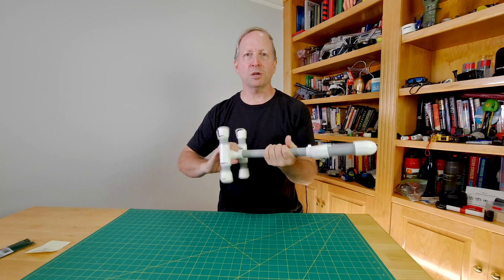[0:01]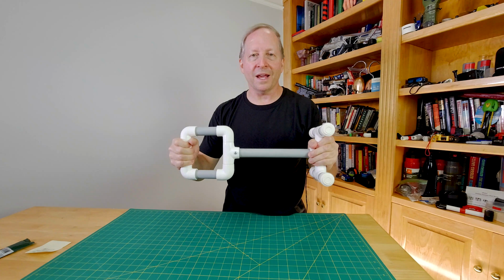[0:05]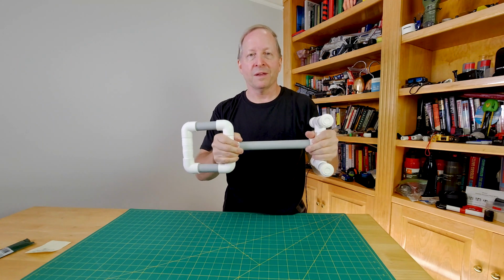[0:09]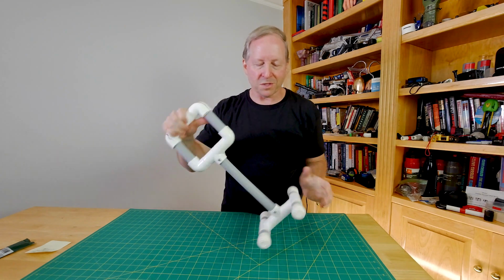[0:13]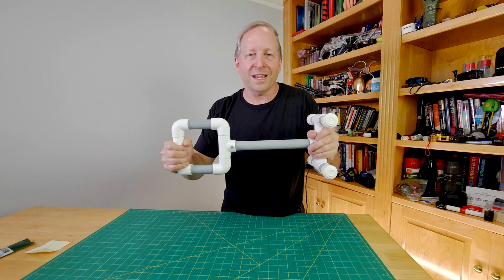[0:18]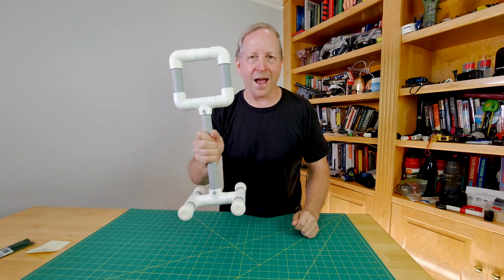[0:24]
Today, I'll show you how I made this standing aid, lifting aid, mobility aid for folks that are having troubles getting out of chairs, or maybe they've got an injury, and so you can use this at different levels. This combines 2 or 3 different devices that each cost around $30 to $40, sometimes even $50. And you can make this guy for around $15.
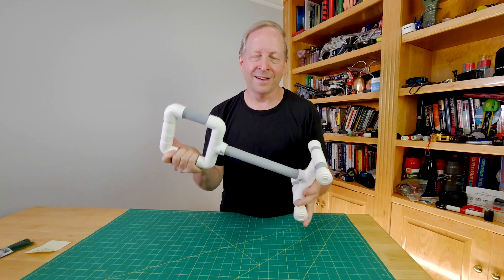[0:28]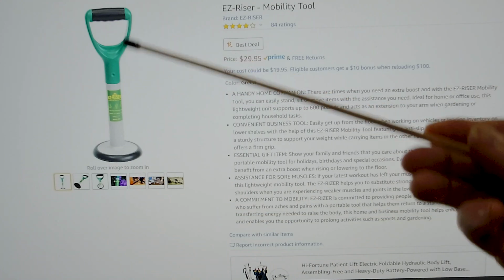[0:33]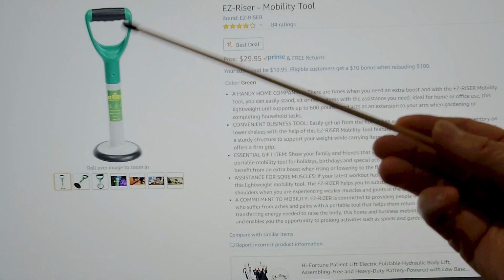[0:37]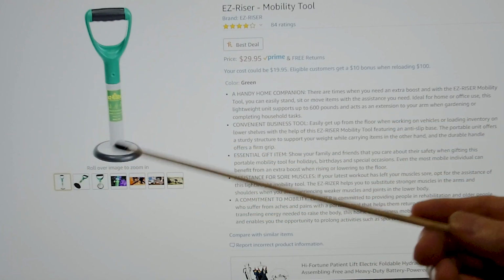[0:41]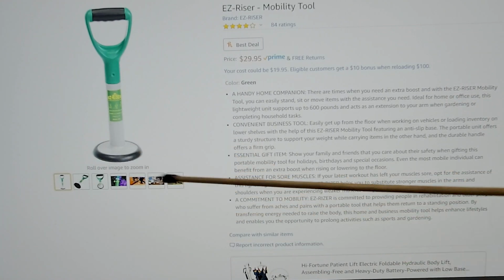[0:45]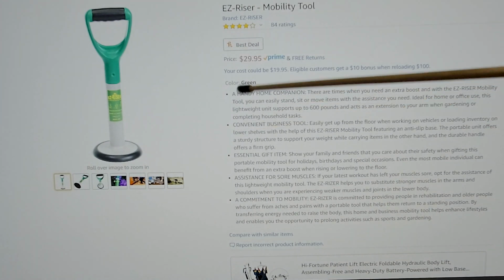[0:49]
Interested? Here we go. Here's one of the designs that I'm basing mine on. You've got a handle here, and people complain that that length is not long enough, so mine will be adjustable. And this base looks relatively small, although there's advantages to a circle. I don't think the base is strong enough, and yet it's fairly highly rated and costs around $30.
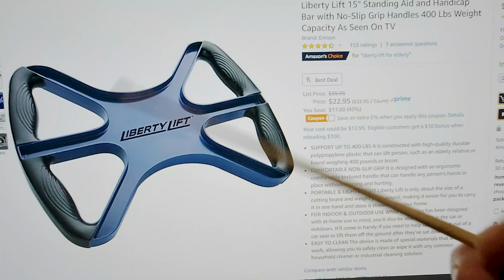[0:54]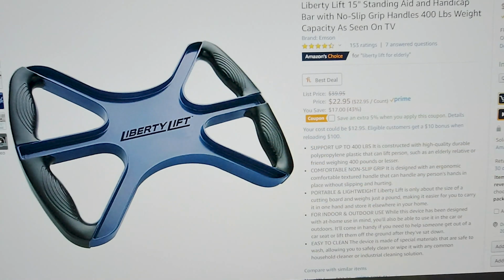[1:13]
First example was a riser. This one's called a lifter. Usually runs $40. It's on sale right now, $22.95. There's a little extra off, but it's just a 2-grip handle. Highly rated. If you bought both separately, around $50, $60. And my build, I'm going to incorporate design features of both of these.
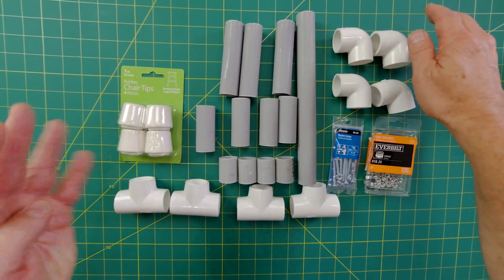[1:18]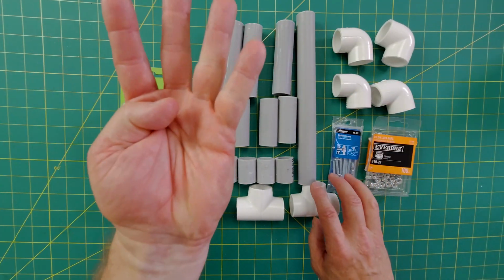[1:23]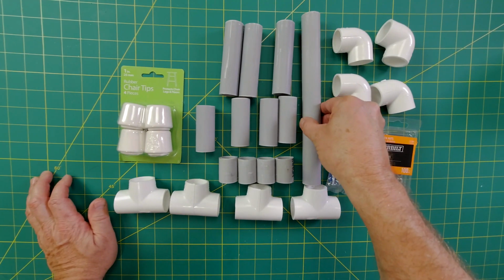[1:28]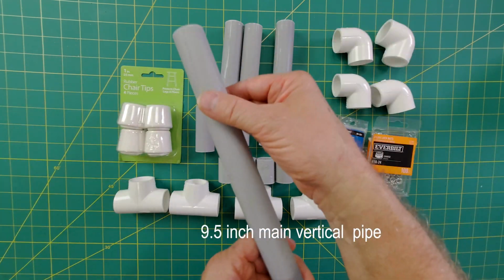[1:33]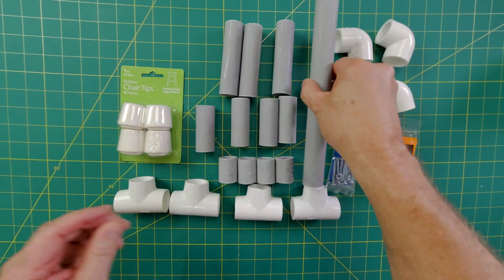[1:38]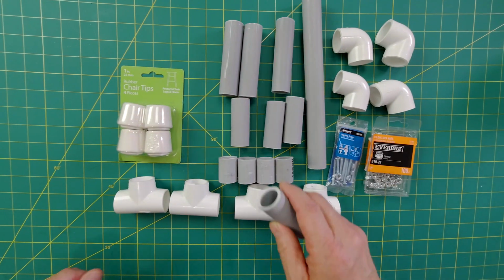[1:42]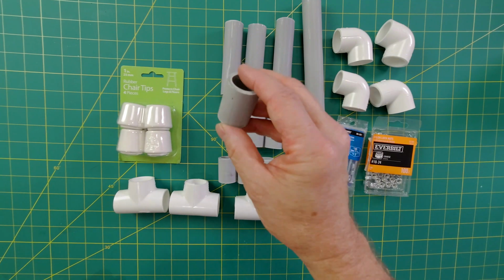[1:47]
There's a lot of parts in this build, but none of them are very expensive. You have 4 elbows. These are 3/4 inch elbows. 4 T's. You have a 10.5 inch long, 3/4 inch PVC pipe. Now you could use white. I'm just using gray kind of as an offset in color. 3 5-inch long pieces of pipe. 4 2.5 inch long pieces of pipe. And then these are just shy of 1.5 inches, and there's 4 of those.
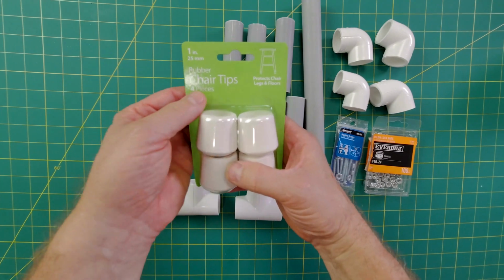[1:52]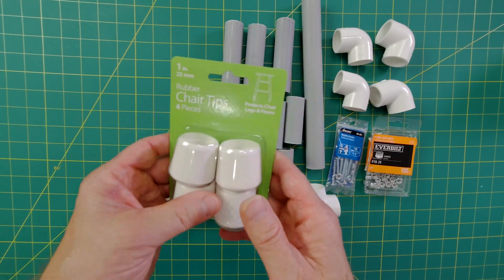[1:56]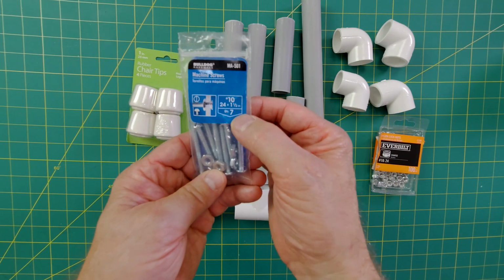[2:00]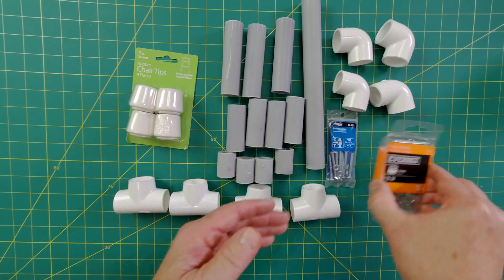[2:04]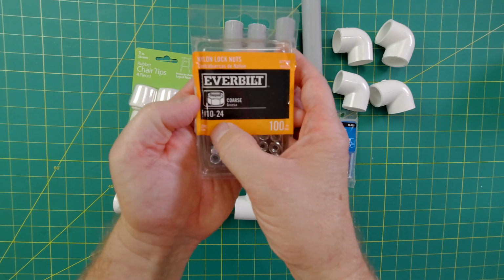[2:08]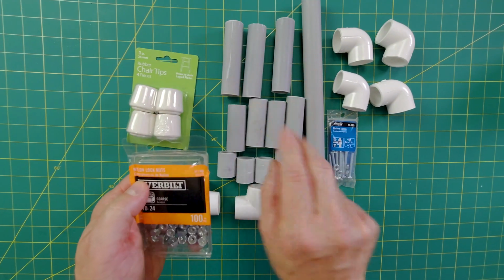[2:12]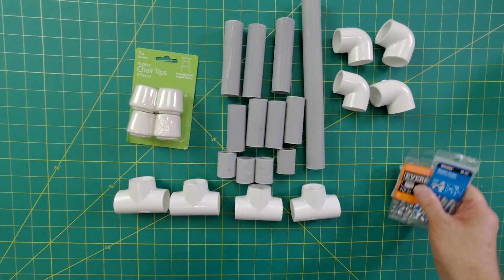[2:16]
And then I'm using these chair tips, and they're 1 inch, 25 millimeter. We're using number 10-24, 1.5 inch long machine screws. You can get this for about $1. And then you don't have to get this many, but we're using the 10-24 nylon lock nuts. We'll need 2 of these and 2 of these.
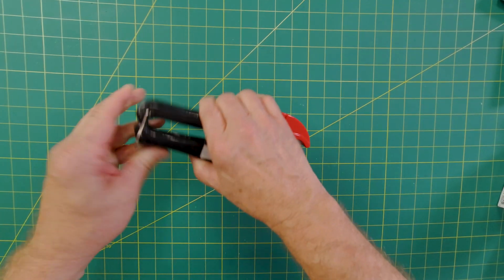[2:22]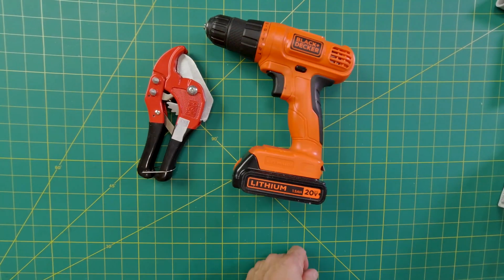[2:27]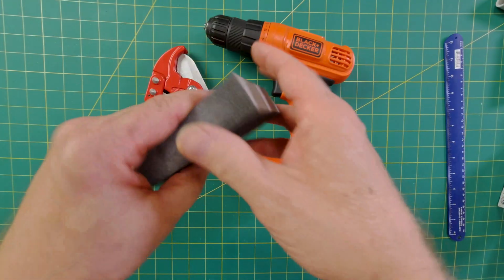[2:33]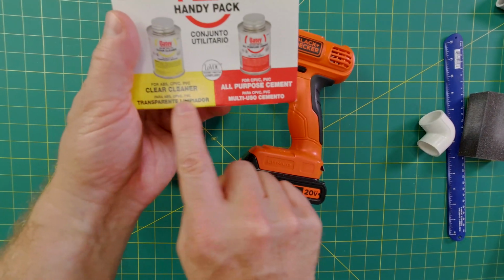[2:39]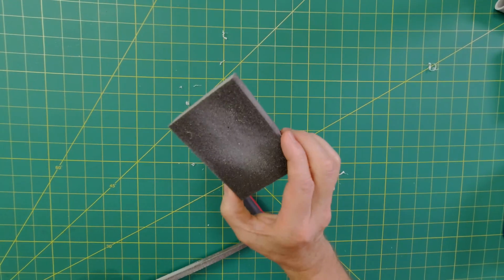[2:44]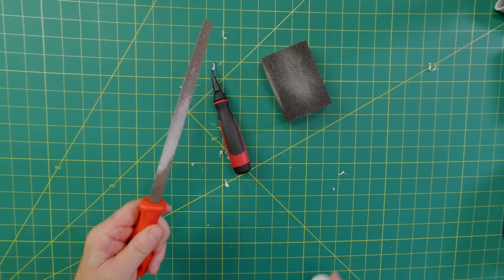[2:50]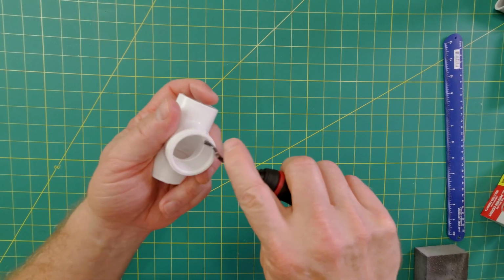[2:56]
Tools, you need a PVC pipe cutter, or you can use a hacksaw, a drill and a drill bit, a tape measure of sorts, or this is a ruler, some sort of sanding sponge, and then you're going to be gluing these up, and I'm just using a handy pack here, clear cleaner, and clear all-purpose cement. Besides the sanding sponge, a deburring tool and some sort of small file also are very helpful in cleaning up these PVC joints. Better than a file though is this deburring tool, because it just gets right in there and cleans it right up.
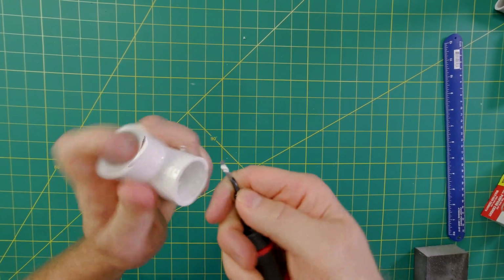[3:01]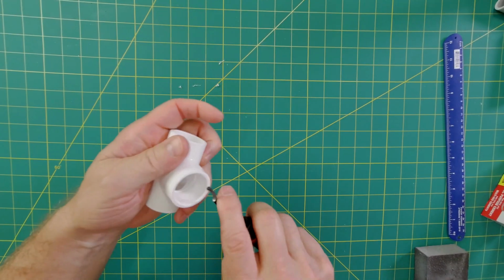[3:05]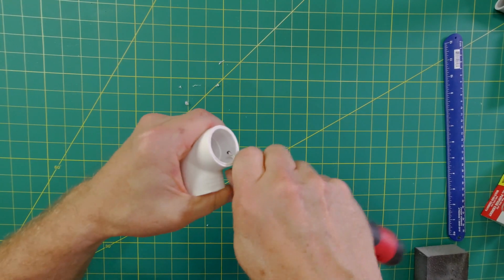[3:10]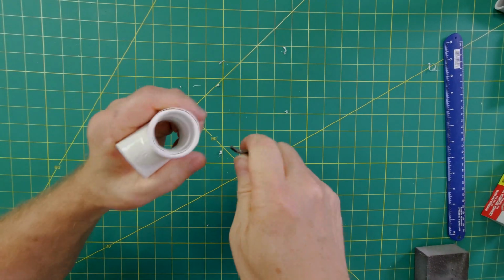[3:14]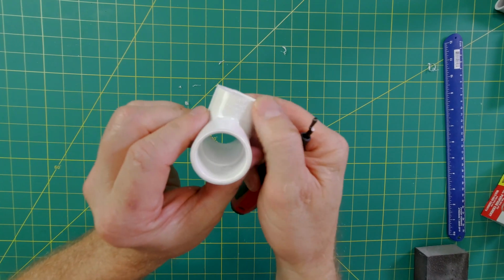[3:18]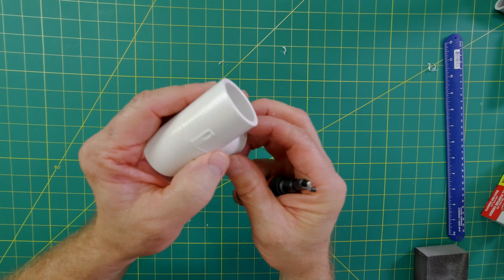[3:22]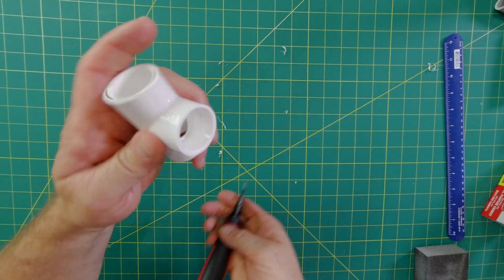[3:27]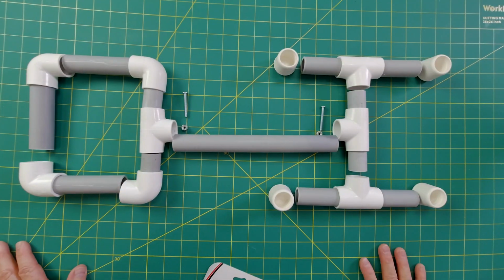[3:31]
I'm going to do an evaluation on deburring tools because they're just that impressive. Carves it right down flat. Just go around and makes real quick work of it. Nice and smooth. And then you can also use the sandpaper. You may or may not be able to see some lettering here. You can take all that lettering out. You could just sand all this down, or you could just leave it rough. Totally up to you.
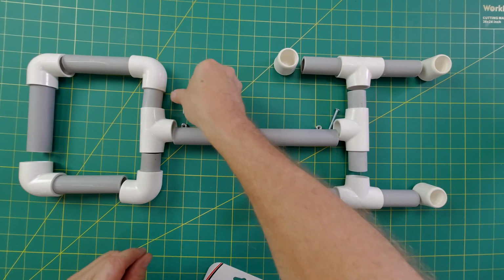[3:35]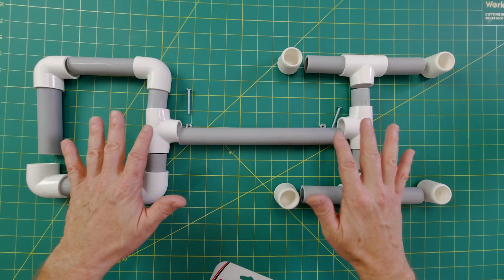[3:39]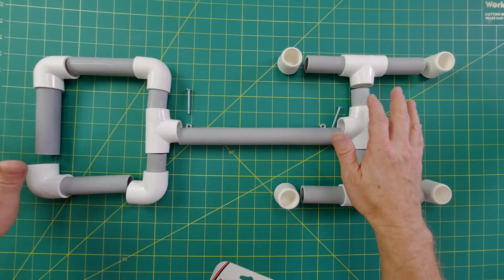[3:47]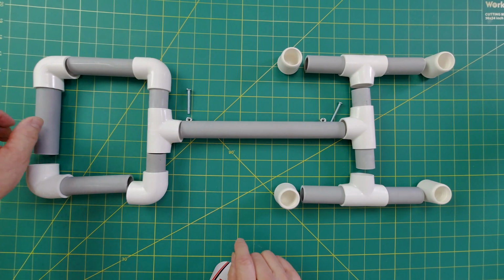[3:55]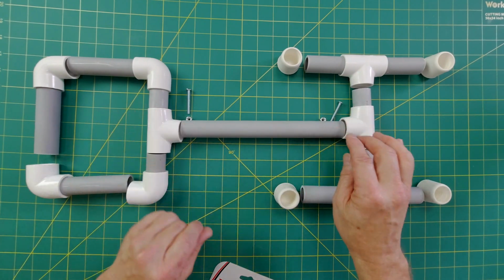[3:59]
Here you have an exploded view of the build. Everything's sanded and cleaned up. You can see the screws here. For other similar constructions, this dimension is 15 inches. I've expanded it out to 17 inches based on comments I saw on other designs that people say that's too short. Now the advantage with this design is that you have 2. You have one that's about 12 inches and one that's 17 inches. So you can push off of here and you can push off of here. I may change that. I might make it longer, I might make it shorter.
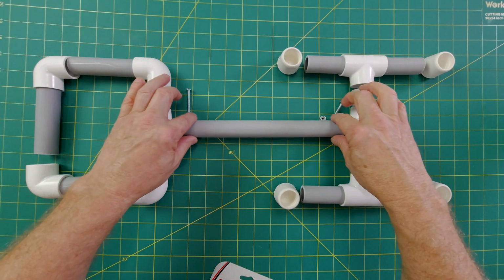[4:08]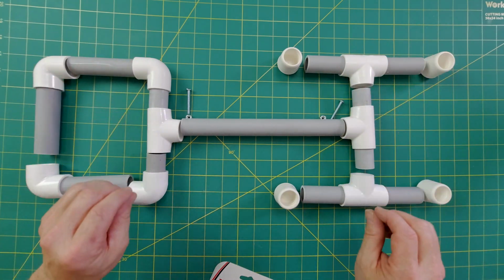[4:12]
So if I glued this up, and you certainly could glue these 2 T-sections together, that would be great, but you would not be able to take and adjust this without starting all over because everything else is glued up.
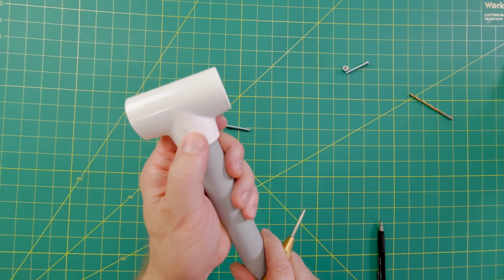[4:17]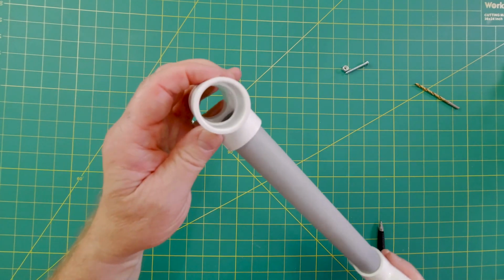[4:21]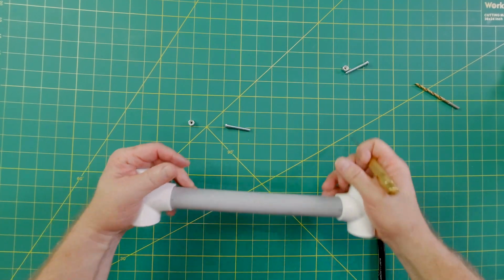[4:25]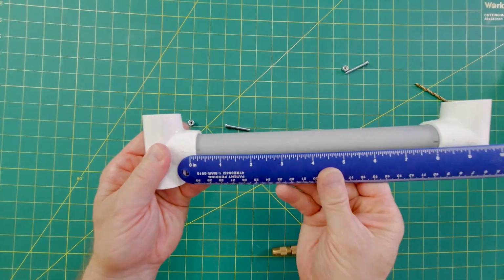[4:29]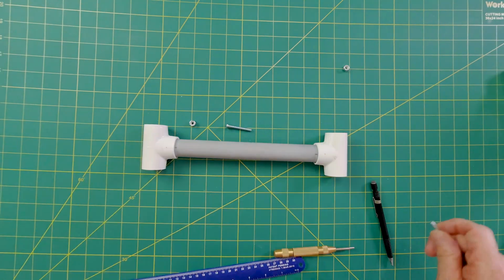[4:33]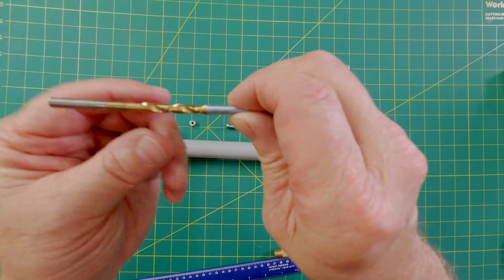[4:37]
Okay, so I've used a center punch and I've actually gone in, and you can see a line right here, and I've lined up the pipe. You can actually see inside and see that the pipe is right to the edge there, so it's a nice strong fit. I'm coming in about 1 centimeter or 3/8 inches on either side. I'm using a 11/64 inch drill bit and drill all the way through.
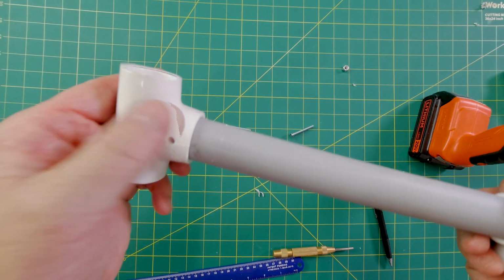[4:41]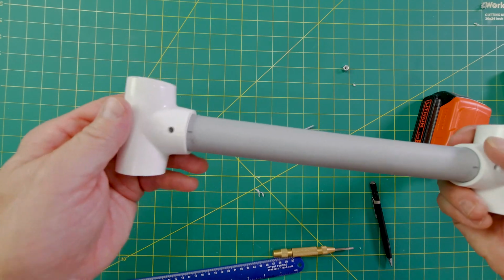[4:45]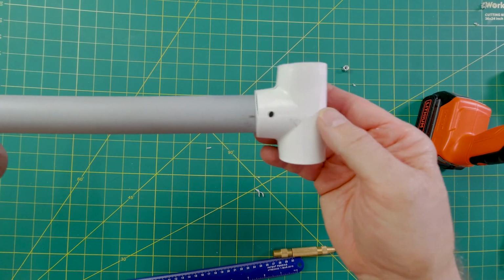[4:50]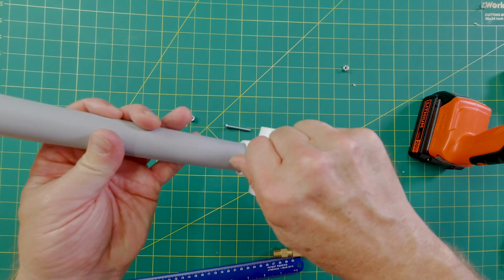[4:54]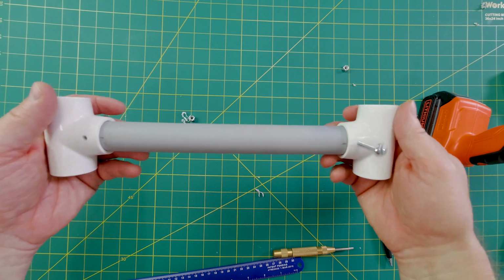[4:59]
I've drilled the holes, and you can maybe see that I've marked a line here and an H here and an H here. That represents the handle, and then B, for those 2 pieces, that's the base. This is going to be a really nice and tight fit, so the thing's not going to wobble around, and it's going to be very strong, almost like it was glued up.
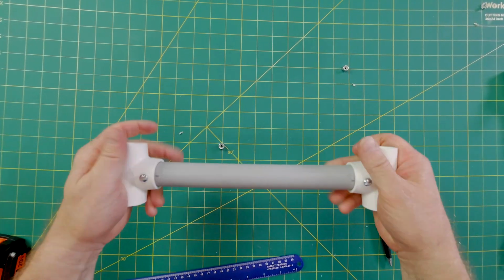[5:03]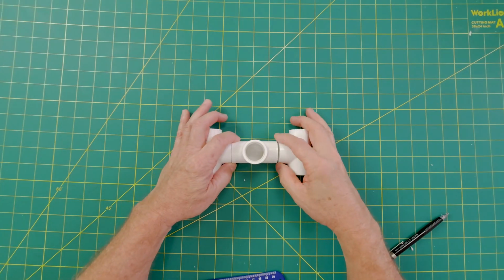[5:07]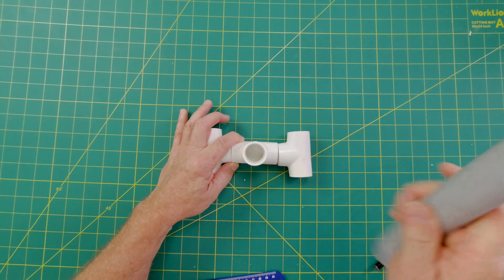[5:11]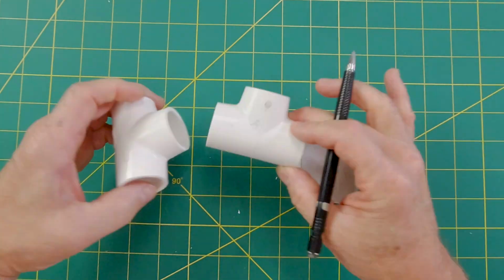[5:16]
Without even putting on the nylon lock nuts, that thing is dialed in, it's locked solid. It's pretty important that this bottom is straight for the post right here. And how am I going to do that? Well, I've marked R on one side and L on this side. Of course, we have the B down there.
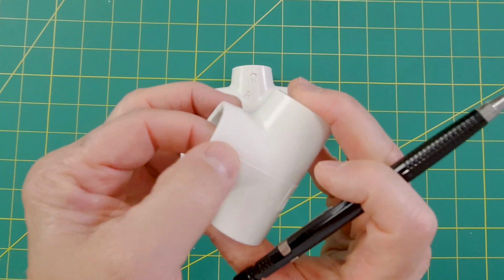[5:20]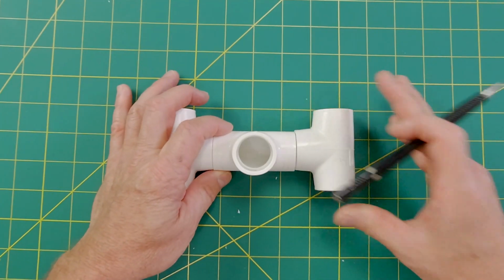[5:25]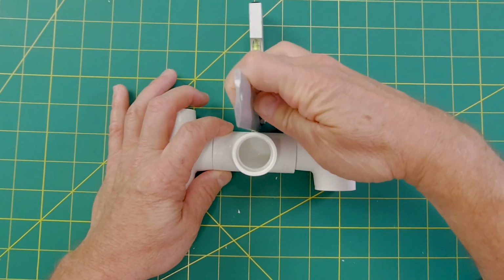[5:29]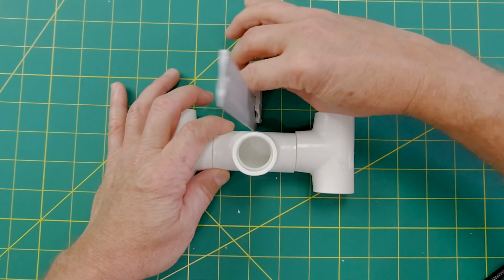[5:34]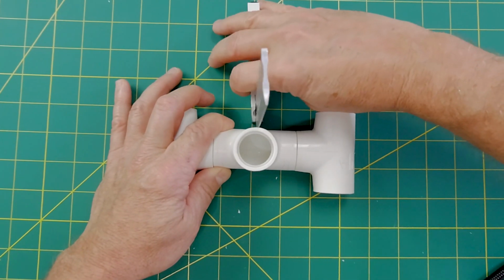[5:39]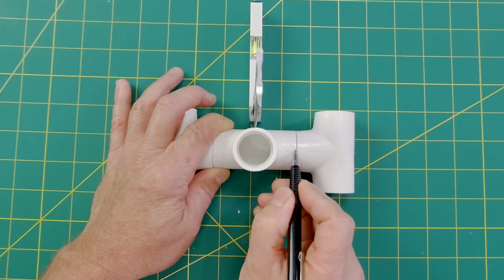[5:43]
And fortunately, we have some lines here that I'm going to take advantage of. So we know those are perpendicular. So all we have to do is get some sort of square, put it up there against this guy. That should get us pretty close. And I'm using pencil as a marker so that I can easily erase it. And then I'll just carry through this line onto here. So when I glue it up, because you don't have much time, I'll have all the parts right together.
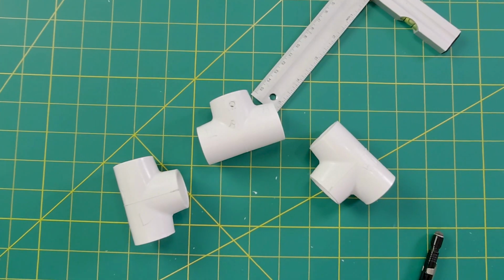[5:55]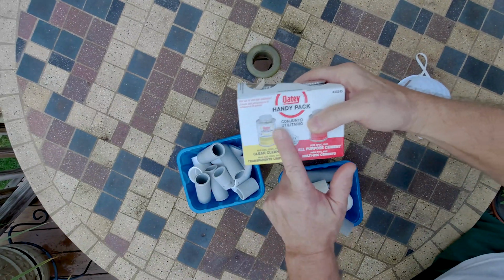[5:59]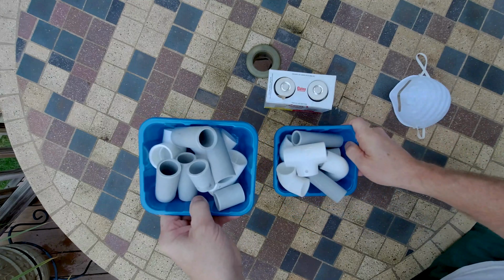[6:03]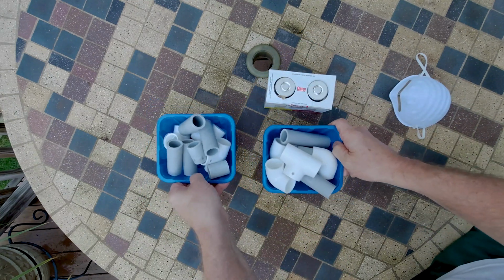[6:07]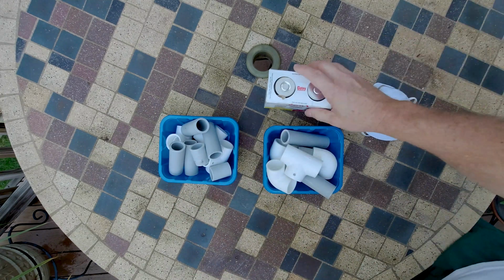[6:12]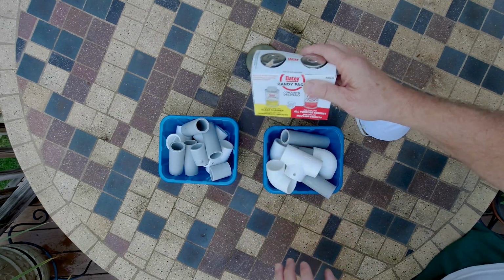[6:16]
So outside we go to glue some stuff up. Here's the setup. I got the glue and the cleaner. I've got the separate pieces. These are just mushroom containers we like to recycle. Great for little projects like this. And I'm wearing a mask, and I'm doing it outside to be heavily ventilated because this stuff probably won't kill you immediately, but if you do a lot of work with it, it's just not good for you anyway.
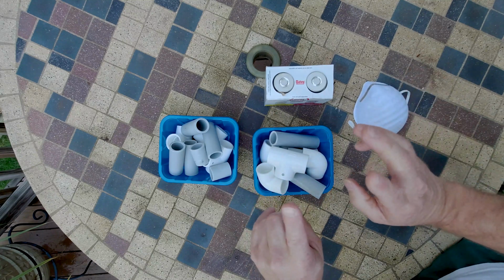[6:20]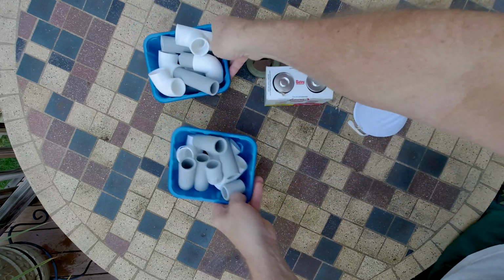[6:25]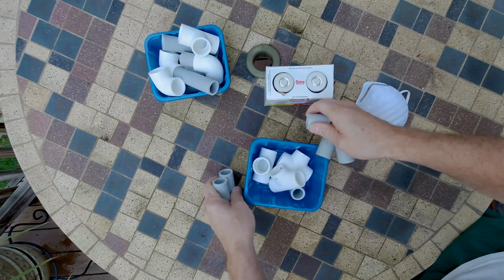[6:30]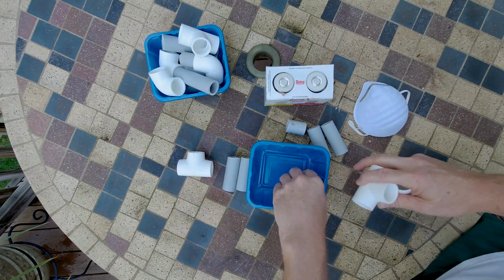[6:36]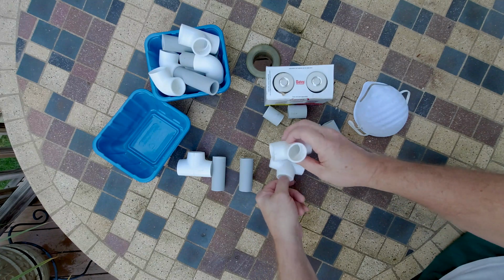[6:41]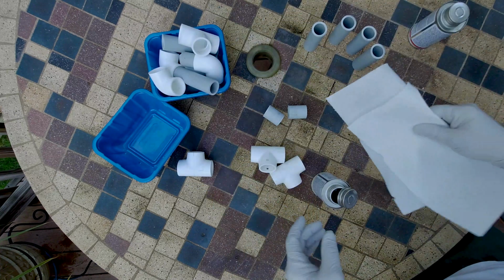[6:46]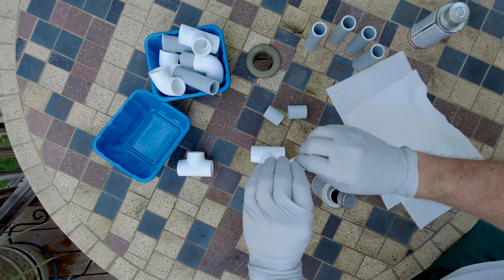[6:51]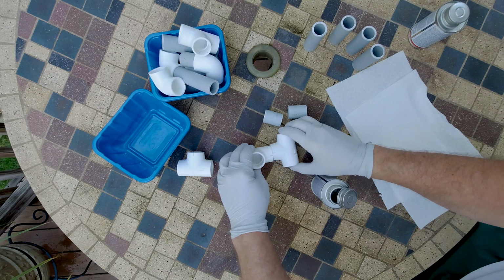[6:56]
So here we go. I think I'm going to do the bottom or the base first. Means this guy, because I'm concerned about that one piece sticking up and doing its job. So let's get that out. And the two connectors and everything else after that should go rather smoothly. I'm also wearing gloves, and I have some paper towels on the ready. I don't really care about the surface too much, and the surface wipes up fairly easily, but it might be best to do this on cardboard or something that you can throw away when you're done.
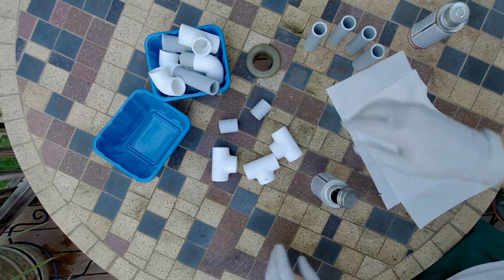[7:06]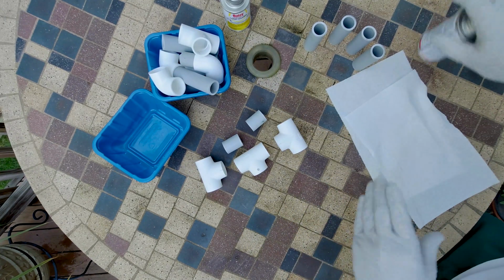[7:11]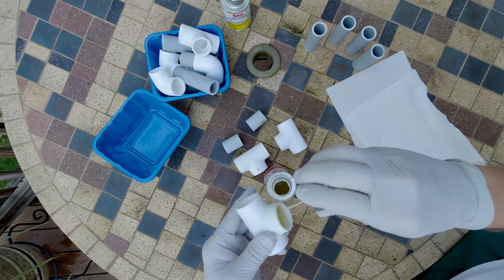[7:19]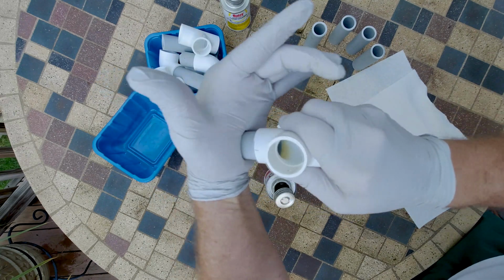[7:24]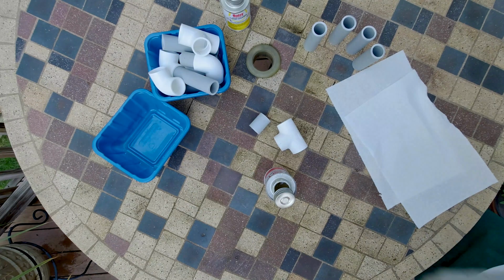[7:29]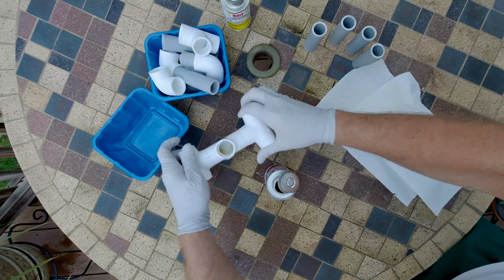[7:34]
So let's get the L and the L, the right and the right. Okay, got these two pieces ready, and this is going to go rather quickly. Okay, set that to the side, and now for the glue portion. Now this is kind of gooey and sticky if you've never worked with it before. You want to put plenty in there. So let's push that guy in there. You can kind of see it's all the way in. Now you can twist and lock this, and you don't have much time to work with it. Yeah, see, that's already locked in. A little bit of twist, press it down.
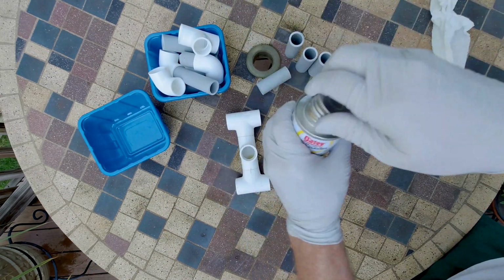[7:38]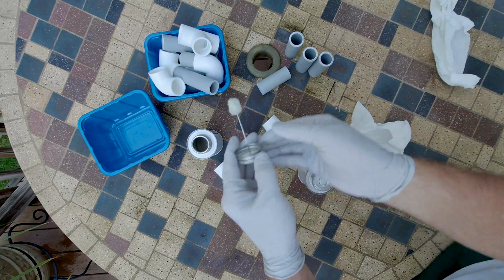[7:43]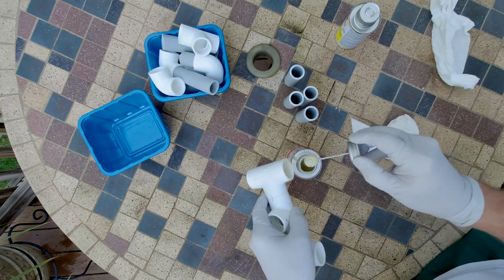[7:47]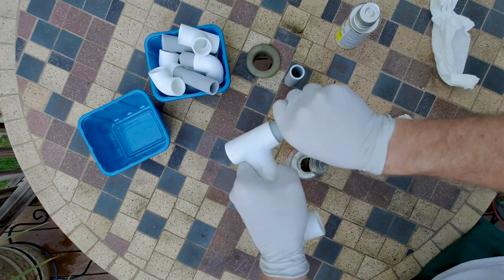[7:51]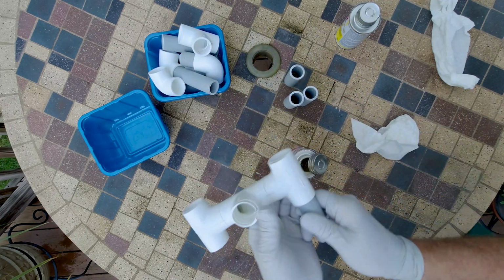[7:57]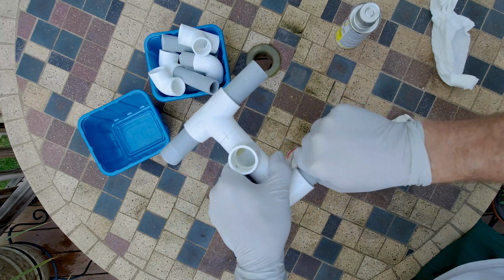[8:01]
Okay, now I'm going to do these guys. Same steps. Clean, glue. I might not put so much on this time. You want enough, but not too much. Pick one. And you know, you can kind of see through there, see whether or not you're getting it all the way to the end. Twist it if you want. Sometimes twist it. Yeah, see, that's all already locked up.
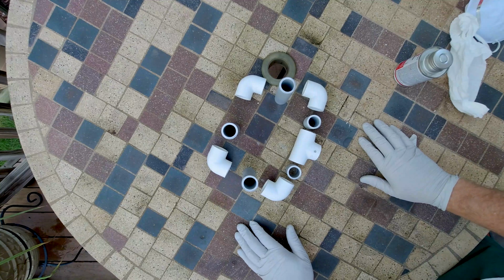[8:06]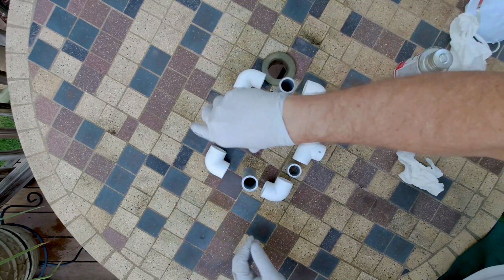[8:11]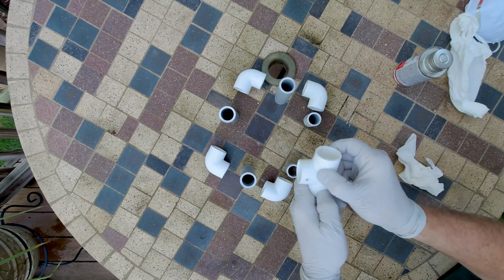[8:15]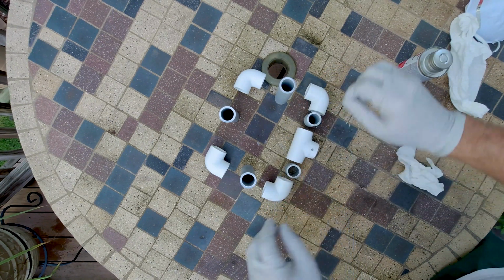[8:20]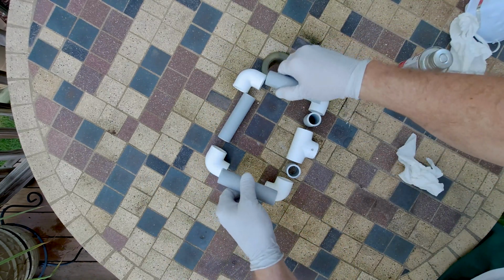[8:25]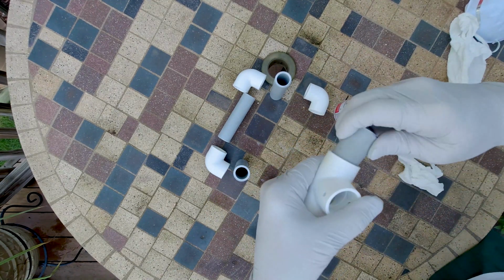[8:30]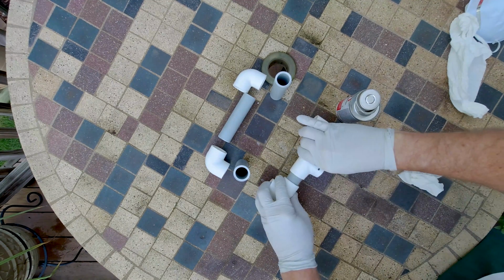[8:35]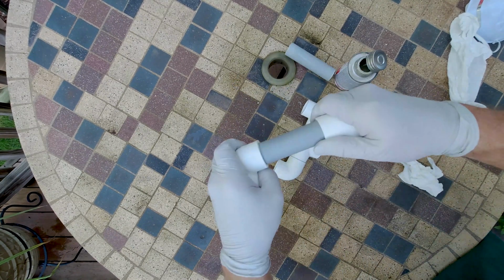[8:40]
All these pieces have been cleaned, and you notice that I've kind of put it in the assembly, how it's going to go. That way I don't accidentally glue that up like this. The rest of it will go rather quickly and easily. So the first thing I'm going to do is glue this side, then I'm going to glue that side, and then I'm going to glue that in there, and then put it all together. Alright, so I'm going to get this guy in here. So push that in there, push it tight, push this in here, get that all together, nice and straight.
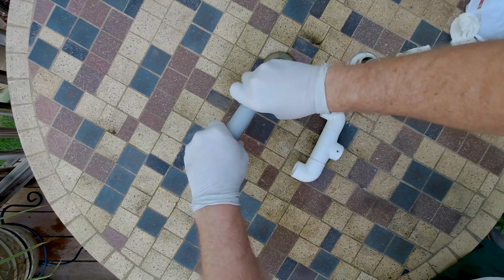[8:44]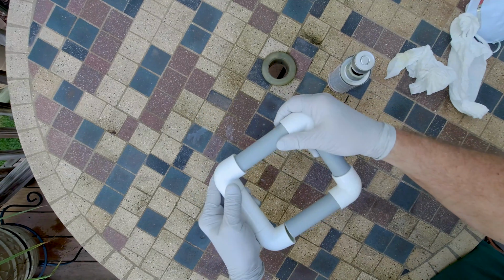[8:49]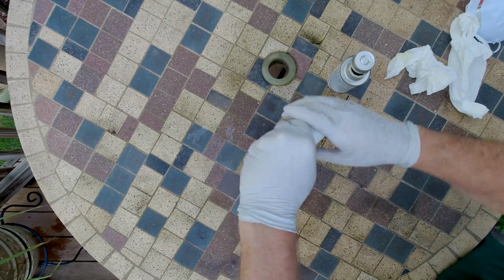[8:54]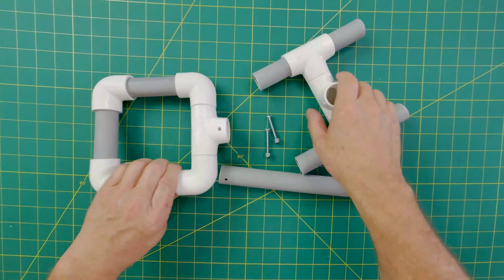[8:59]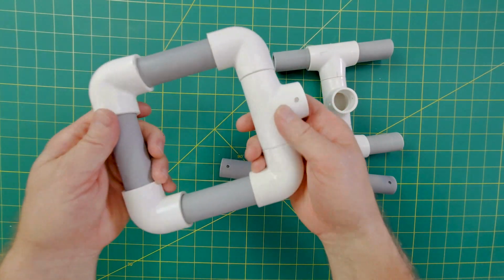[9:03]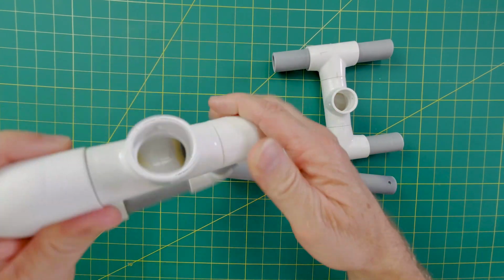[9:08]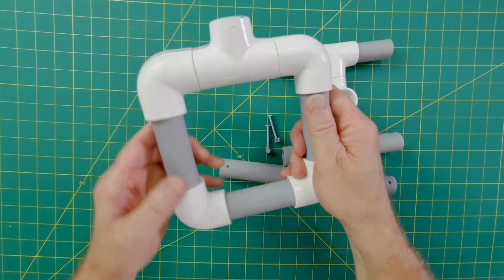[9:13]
Alright, get that down nice and level. Push down, make sure they're even on both sides. So here we go. Get in there, and then push them down. Yeah, that's nice and flat, all square. So here's the final pieces. Now, as far as cleanup goes, you can use acetone. Sometimes you can scrape off any extra glue. It's still soft while you're waiting. You could sand this down, but I'm pretty happy the way it turned out.
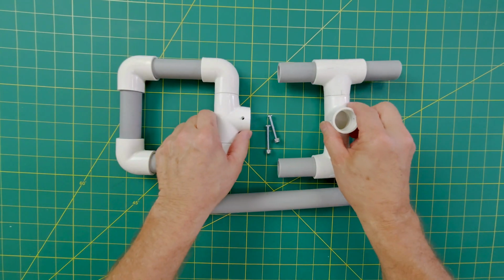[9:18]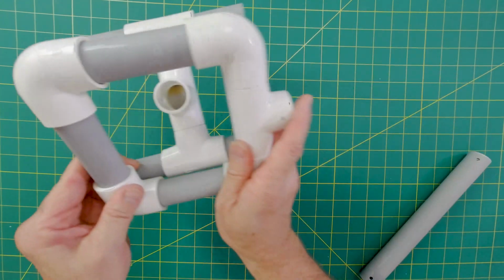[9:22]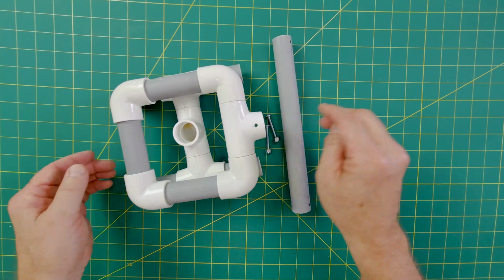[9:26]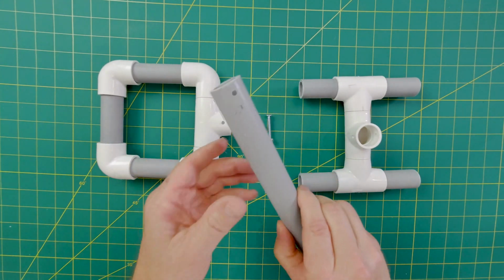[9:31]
Another great thing about this project is it's transportable. If you wanted to go on a trip and you wanted to pack it away in luggage, disassemble it this way, and then when you get to your site, just put it back together.
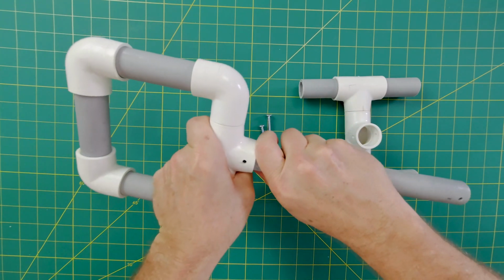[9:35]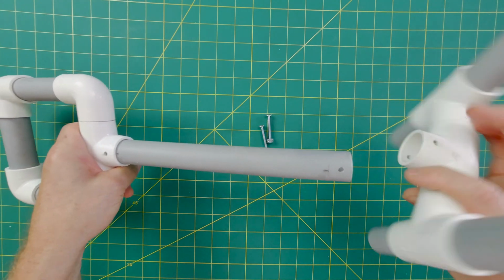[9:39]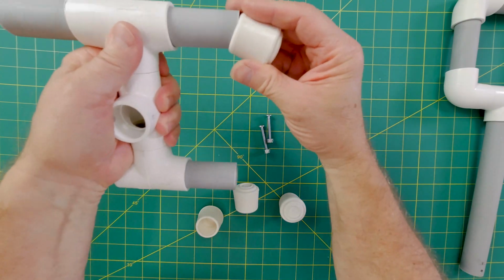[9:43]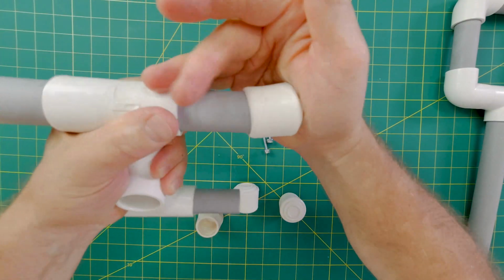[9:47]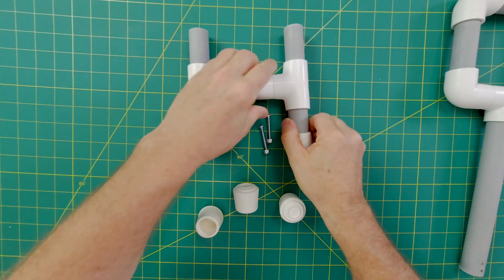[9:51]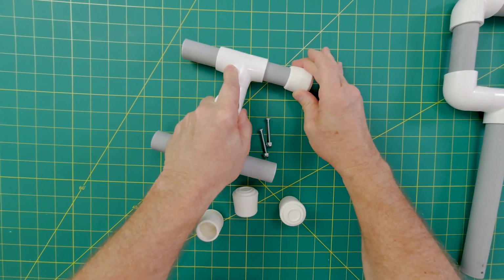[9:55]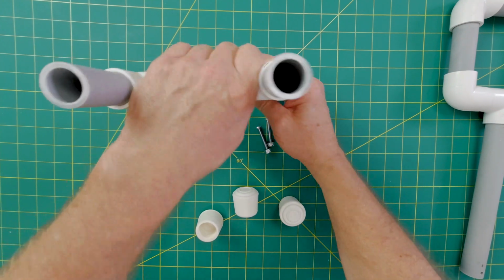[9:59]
And I'm just going to push these on. And they're going to be tight, and that's the way you want them. And the reason why these end tips are on there is to stabilize the bottom, but also to give you grip, both on the side here, on the flat bottom, but also on the side here, depending on how you want to hook something.
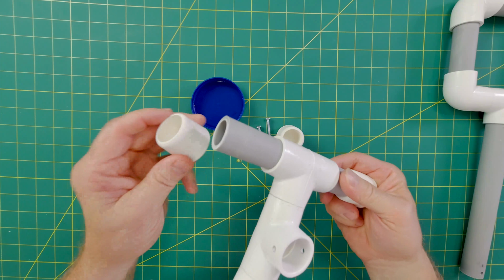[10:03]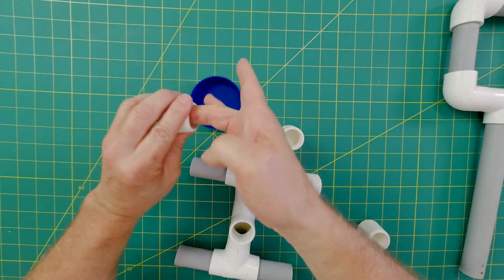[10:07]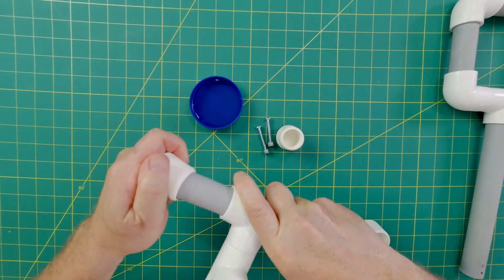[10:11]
These are a pretty snug fit, and I was having problems putting it on. So what I did is just got some water, and you can just run around the inside here, and that will help you slide them on. And the water will dry out pretty quickly.
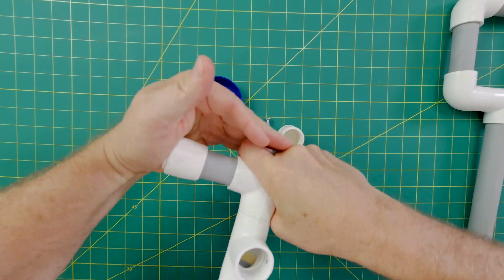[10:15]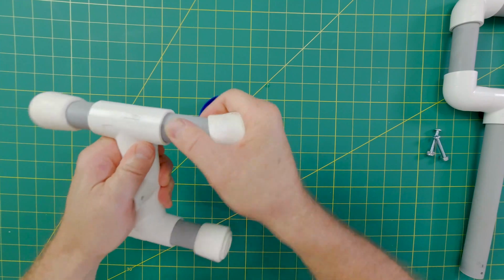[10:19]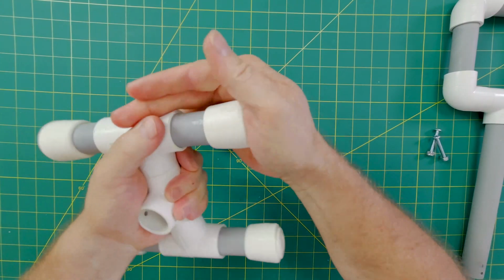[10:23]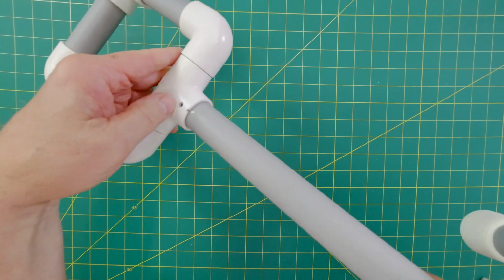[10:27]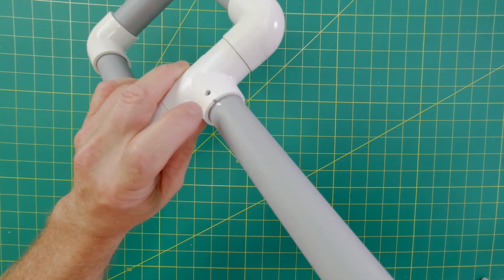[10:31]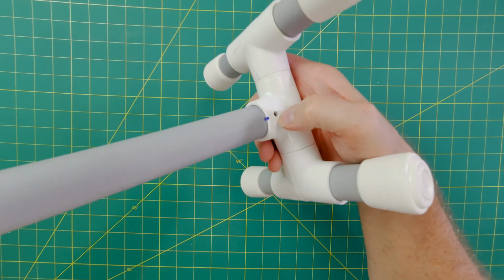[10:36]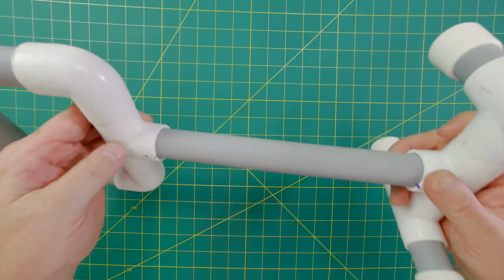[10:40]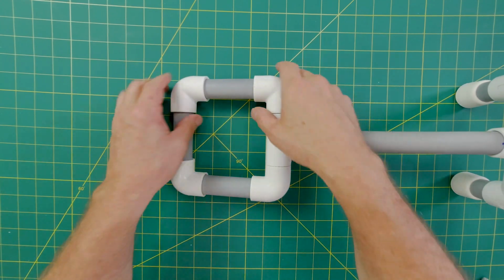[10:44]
There you go. So I can discern the top and the bottom now that I've erased all the marks. I've actually put, in this case, a silver marker on the top and a little blue matte marker on the bottom, and that's what I'm calling the back. Now, a couple of thoughts on how to finish this off.
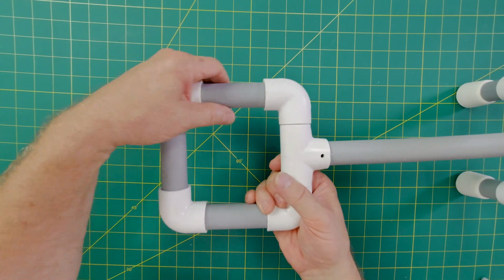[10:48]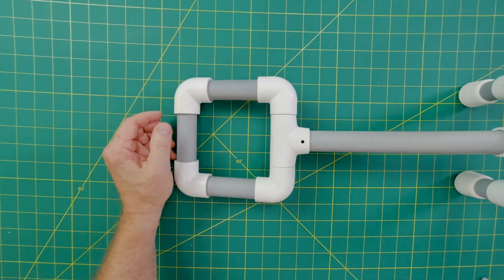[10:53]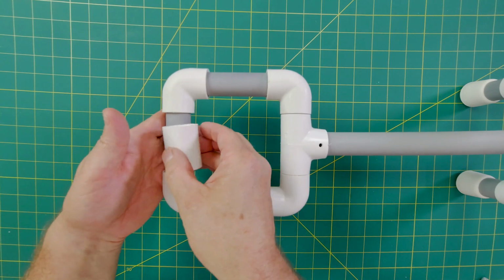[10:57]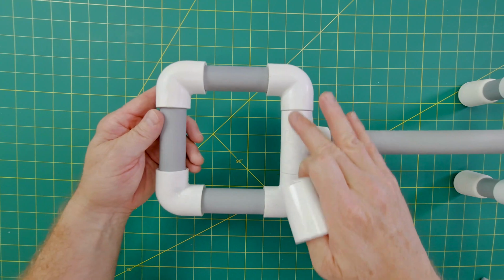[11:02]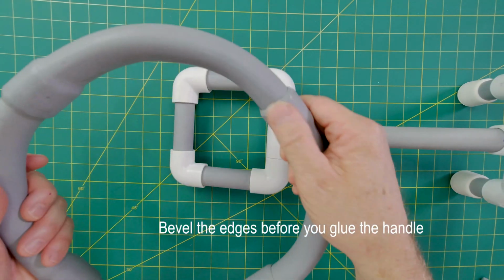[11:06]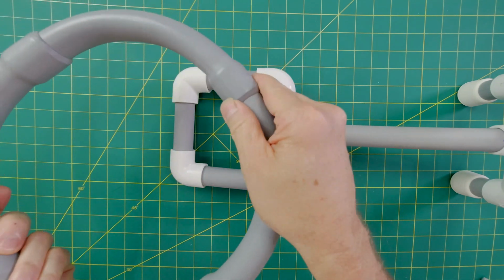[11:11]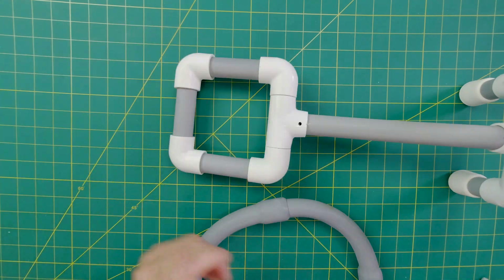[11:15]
This works fine, and for most people, you might want to have the little edge as a grip, but if you're sensitive to that, there's a couple options. You could insert a coupling in here. You can actually get them a little longer, about that size, so that would be flush here and flush there. The other thing you can do is bevel the edges like I did in this gym ring build that I had. You can file and sand down those edges to make them nice and smooth, or I'm going to finish it off in this case with this comfort grip.
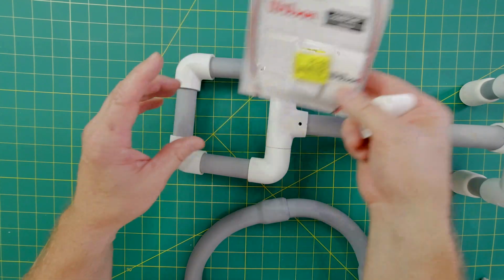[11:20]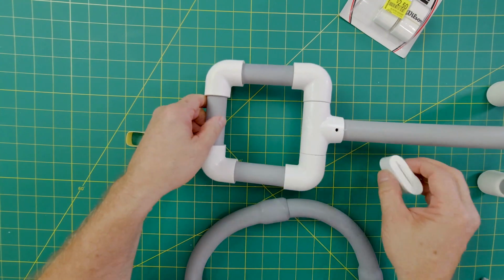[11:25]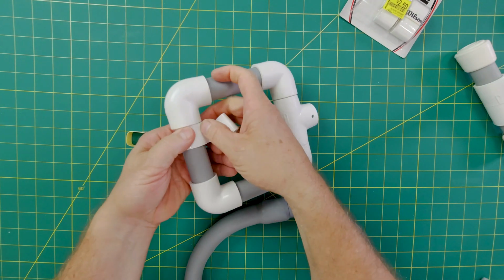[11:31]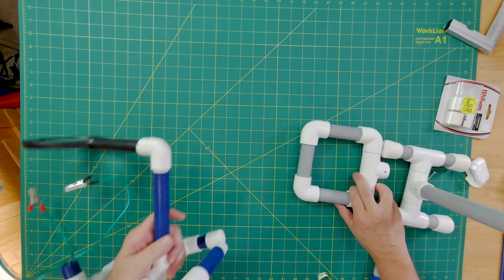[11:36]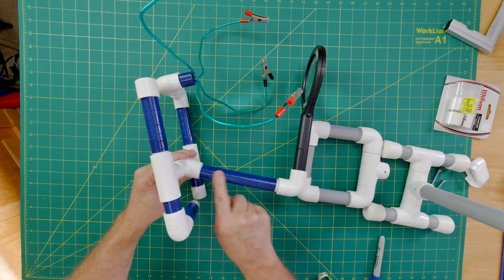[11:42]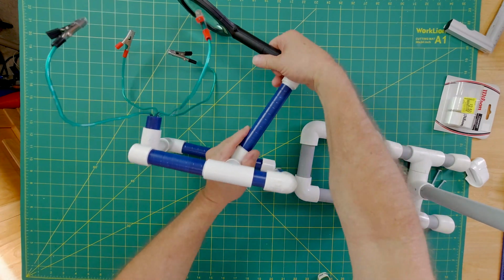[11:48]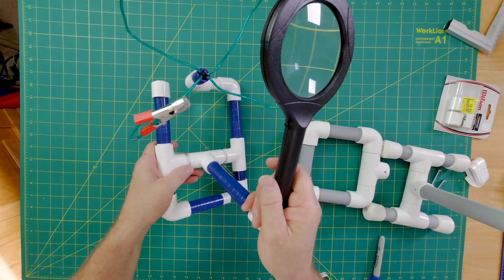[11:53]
It's just a racket handle grip. I got it pretty cheap, so we're going to try putting this guy on and seeing how it works, and just wrapping it here on the top. So let's take the base off and we'll work on that. The great thing about this is you can build it up as little or as much as you want. Or you can use electrical tape or duct tape and do something like I did on this project and just wrap it. In this case, blue electrical tape. Electrical tape and duct tape comes in many different colors, and so there's plenty of options on color to design it specifically for you or for the person that you're making it for.
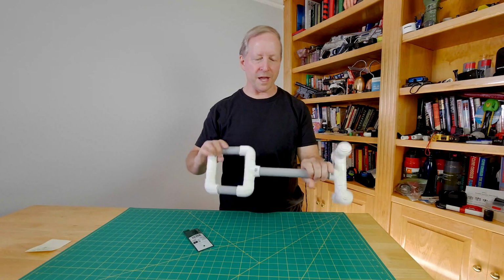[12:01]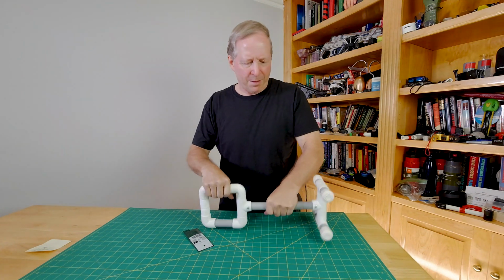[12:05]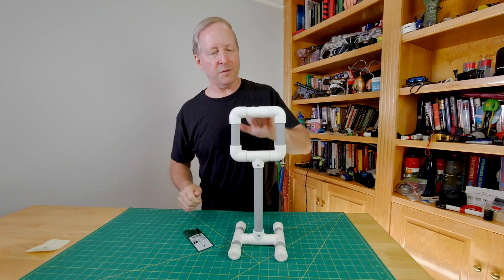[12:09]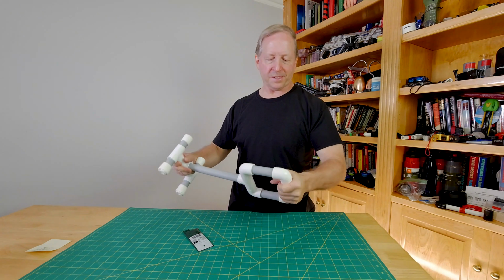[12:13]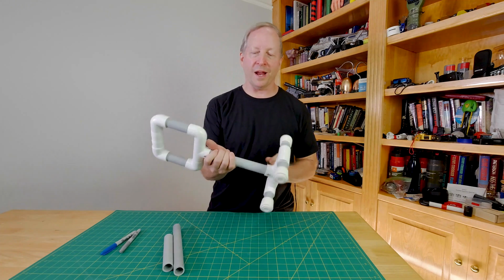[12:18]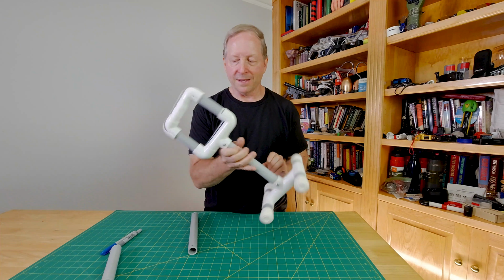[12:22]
And here it is all together. It works great lifting on the side. Maybe you're on a couch and you want to lift up from that. You can use it at this level, at this level. I kind of like that grip, that tennis grip. Just out of curiosity, I decided to go with a 9.5, which is the original, down to 8. And then I'm going to do a 6, and I'll show you the comparison.
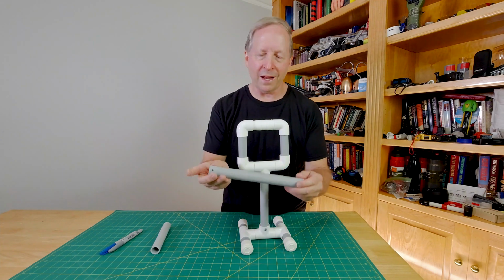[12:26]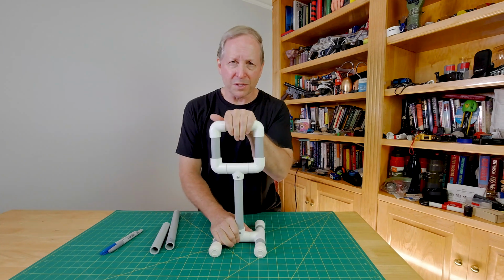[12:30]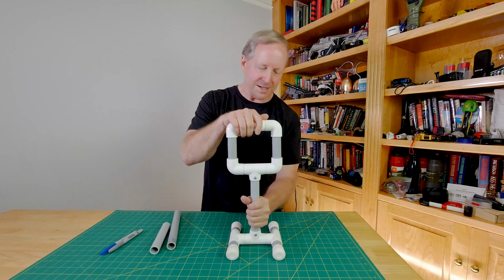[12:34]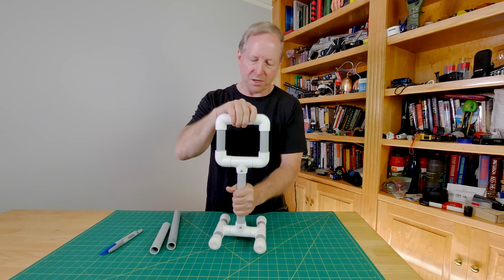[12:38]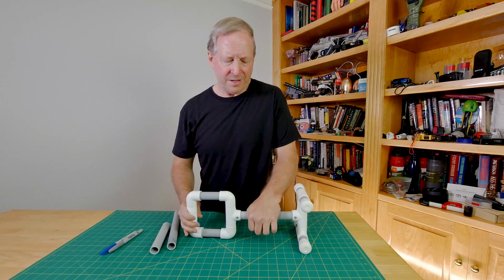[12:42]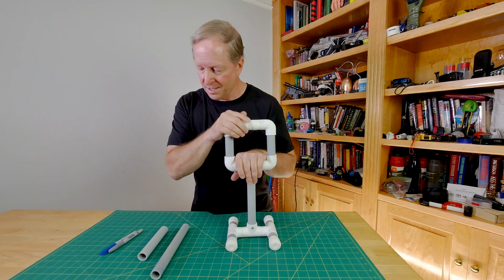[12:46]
You don't want to make it any longer than 9.5, and the reason why is because then it moves around a little bit too much, and as you make it shorter, the stronger it's actually going to be. This is what 8 looks like. Still functions quite well to the original intent, maybe a little better. So I'm trying to find the sweet spot here. So let's do 6 next.
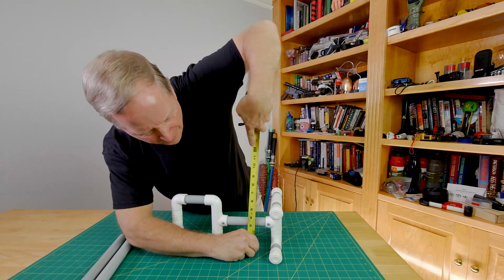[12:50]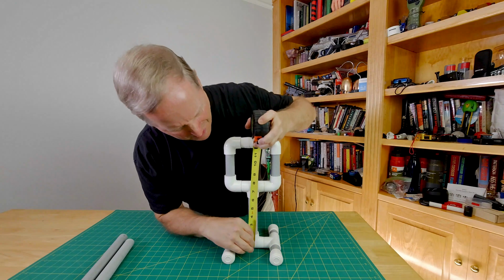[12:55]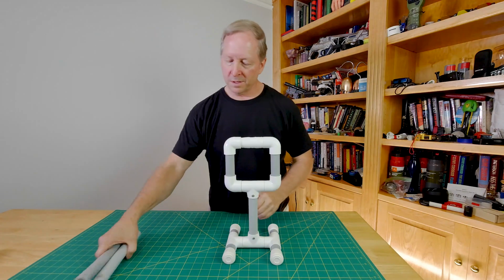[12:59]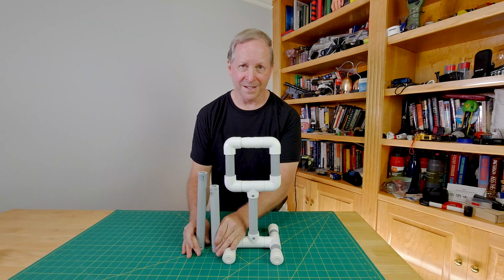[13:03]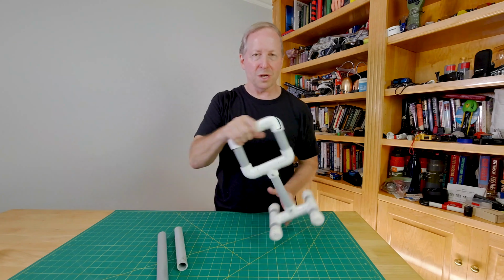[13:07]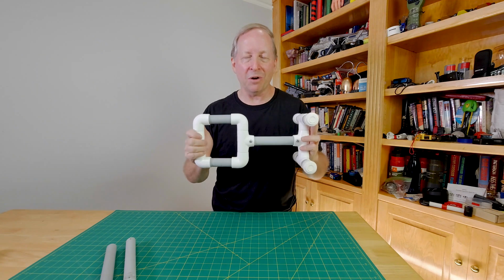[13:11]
Here's the 6-inch version. This is 4 inches tall. What I call the middle handle is around 9 inches tall, and then this is 14 inches tall. You got a whole host of options here on height. That's what I try to do with all my builds, build in options so that you can customize it for what you want to do. So now it's time to go and test this guy out and see how it does.
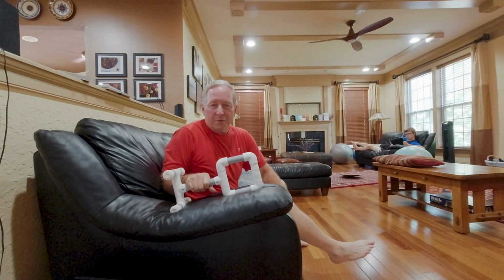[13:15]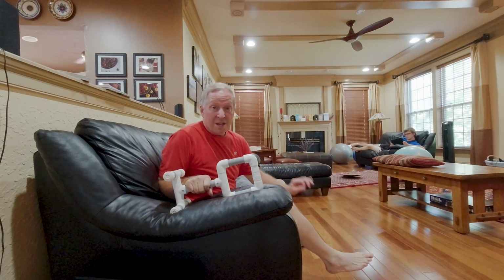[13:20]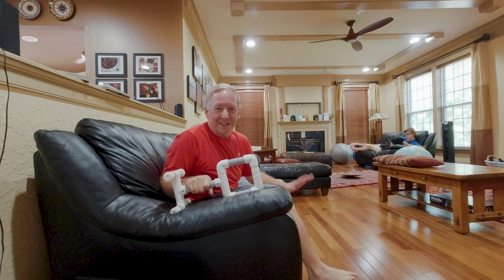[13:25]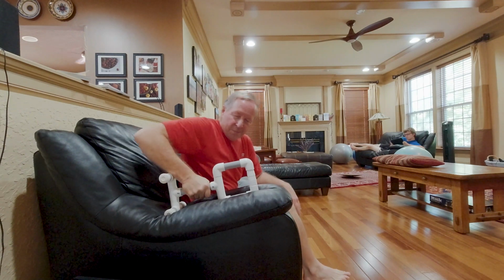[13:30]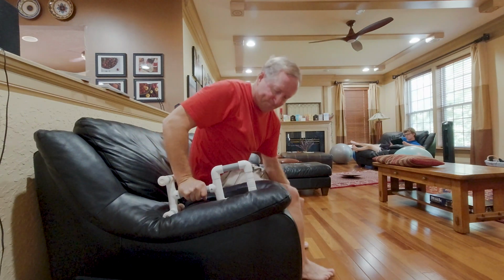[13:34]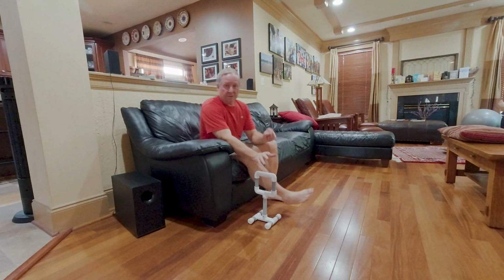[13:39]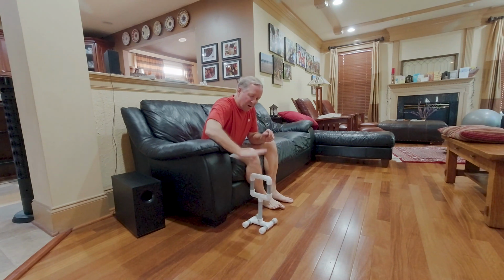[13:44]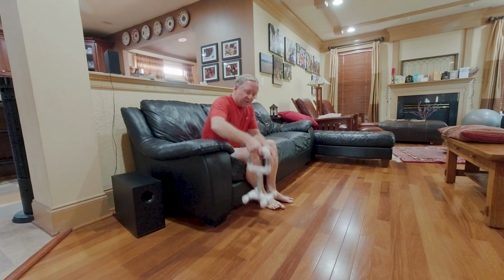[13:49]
All right, I'm coming up with what I consider worst case situations for getting out of really soft chairs and a lounge chair that I think is nearly impossible to get out of, even when you don't have a bad back. So here we go. I'm going to use the side this time, and I'm going to try to push off mostly with my arm. Yeah, that works pretty good. This is independent, doing it on your own. If I had the taller version, it would be up around here on the handle, and then this is about the height of where this would be.
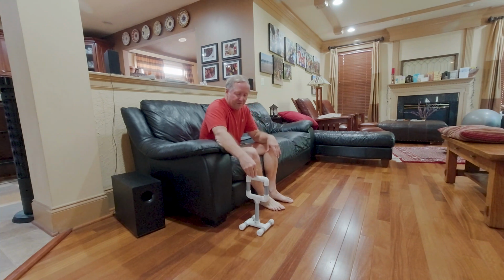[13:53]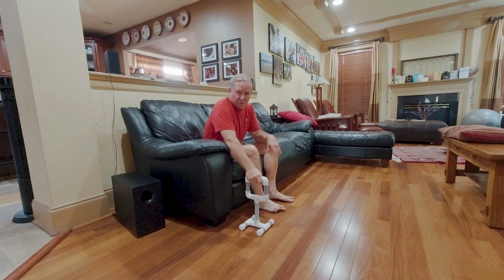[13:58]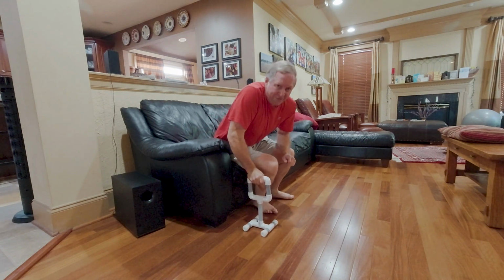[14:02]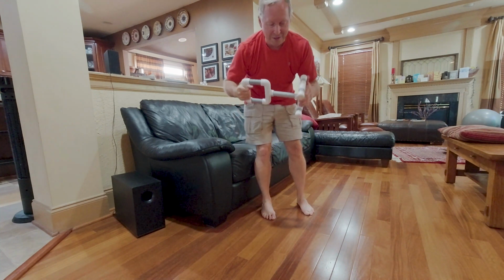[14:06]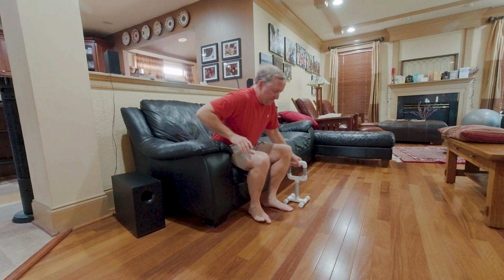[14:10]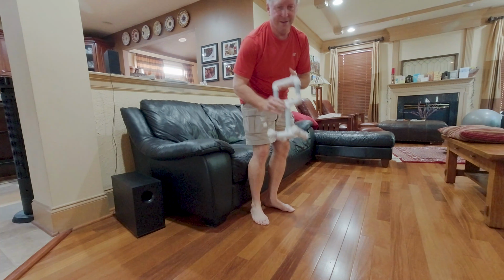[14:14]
But we're just going to give the shorter guy a chance here. So I'm just pushing on here and going to use mostly arm. Scoot up forward and push off. Okay, seems to work. Let's use on this hand. And that's how it works with this guy.
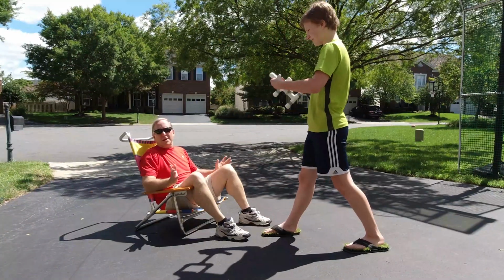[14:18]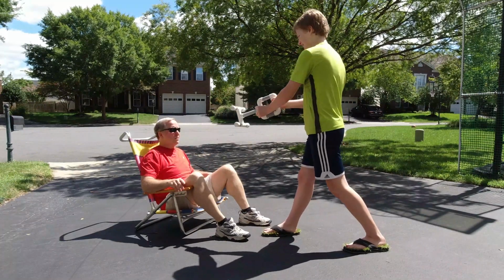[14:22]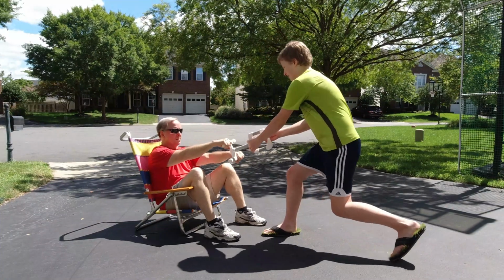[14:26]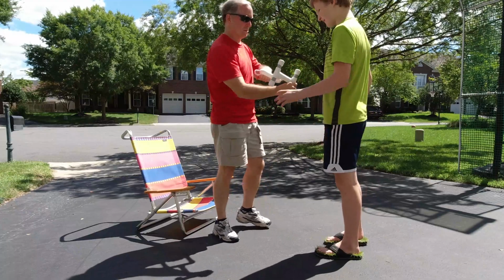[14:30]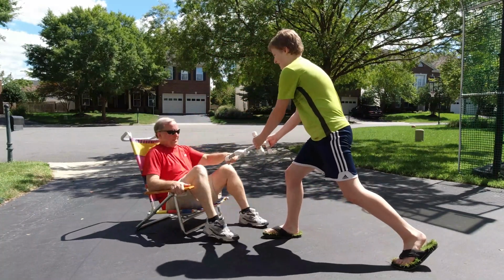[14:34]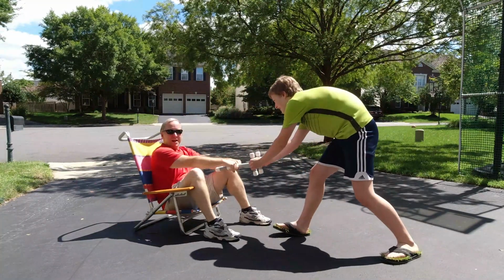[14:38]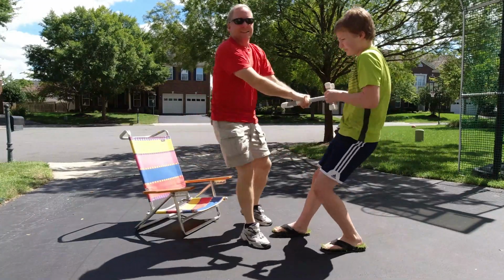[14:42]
Here's what I consider the absolute worst case. A very low to the ground lounge chair. Oh, you're gonna give me that one? Okay, so I'm gonna try pulling up like this. All right, relatively easy. Try it this way. Oh man, hold on. All right. Okay, we're gonna try a couple more times. Bend with your knees. I don't want you hurting your back. There we go.
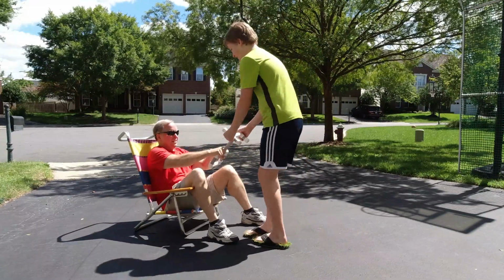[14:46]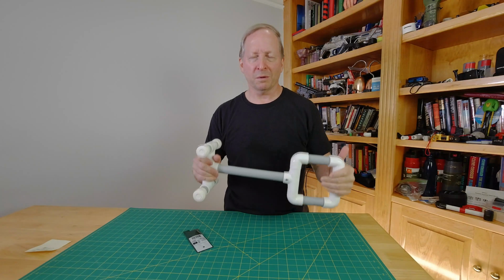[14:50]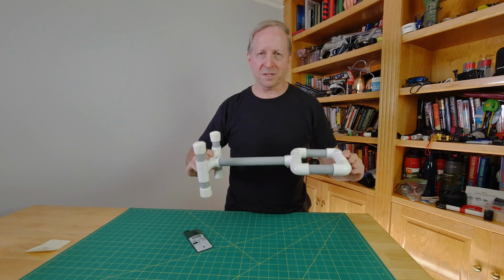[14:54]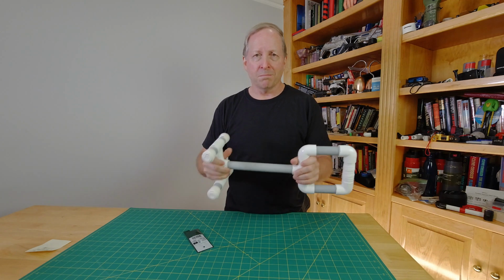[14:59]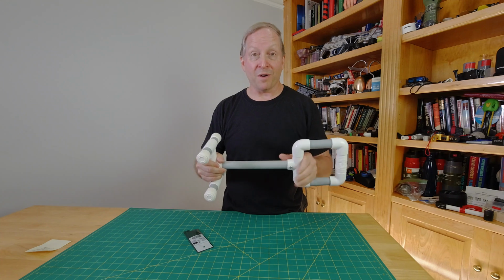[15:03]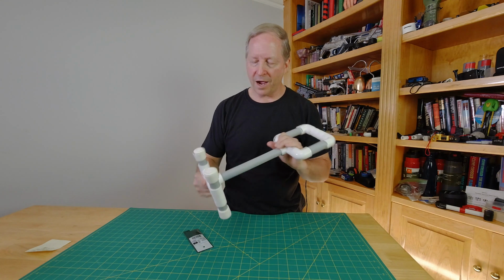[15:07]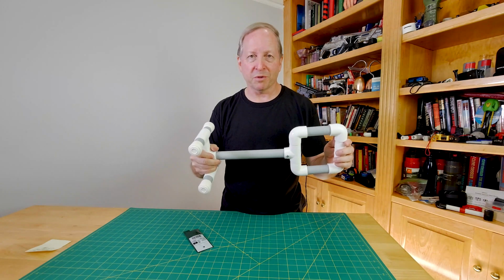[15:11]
And now, the legal message. I can't guarantee your design or how you're going to assemble something that looks like this. This is to give you some ideas. But if you're going to make this design, you're on your own as far as the quality of your build and how it turns out. And if you have improvements on this design, please share with the group, because I'd be really interested to find out what you might be able to come up with.
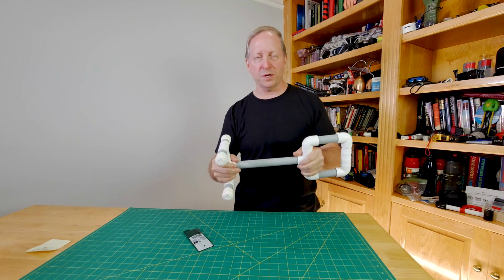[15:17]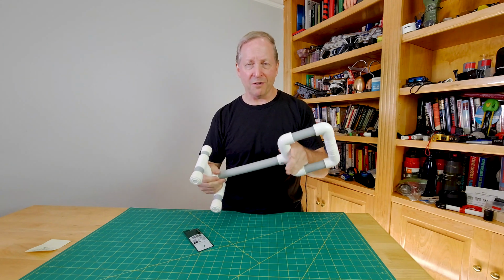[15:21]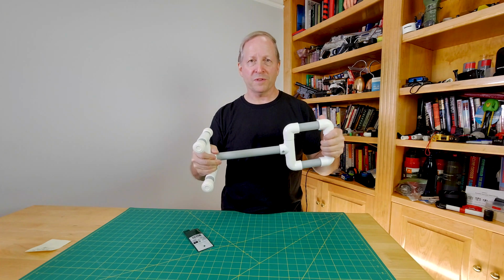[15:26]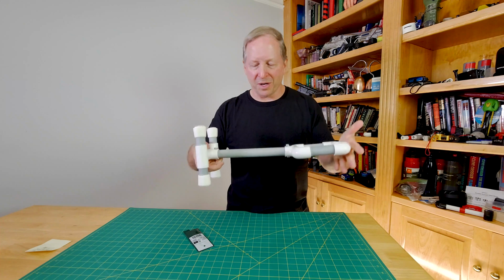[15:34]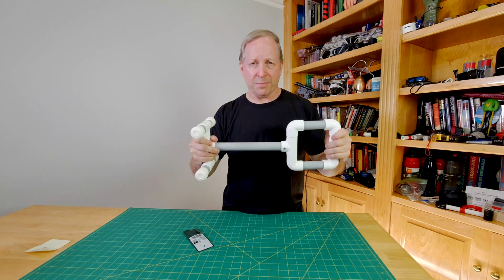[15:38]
Thumbs up and comments always appreciated. Thanks for watching. This is the first in a series of videos on how to make stuff that's going to help people with disabilities or some sort of mobility challenge. There's a lot of things out there that people are overpaying for, and it kind of makes me upset, so I'm going to come up with some of my own designs that you can make a lot cheaper.